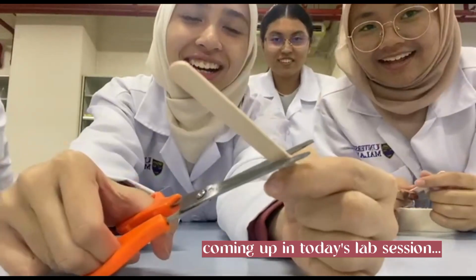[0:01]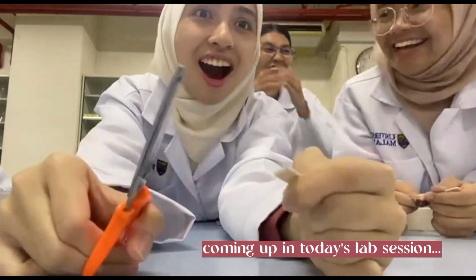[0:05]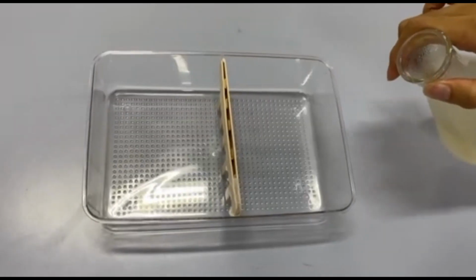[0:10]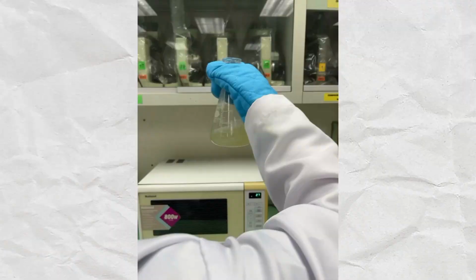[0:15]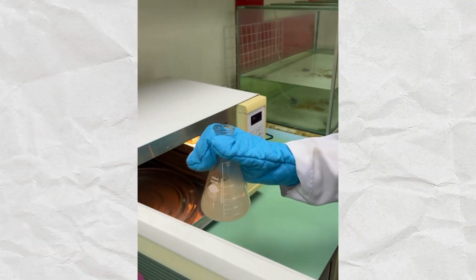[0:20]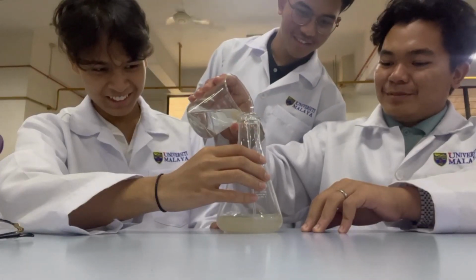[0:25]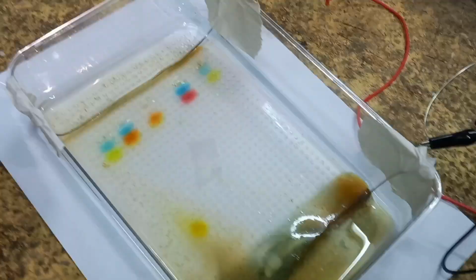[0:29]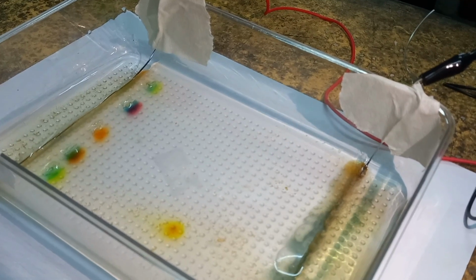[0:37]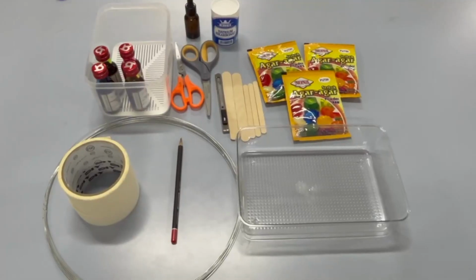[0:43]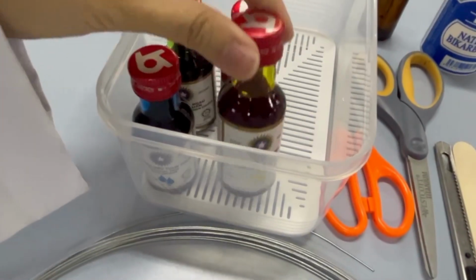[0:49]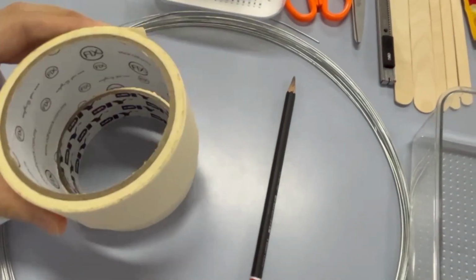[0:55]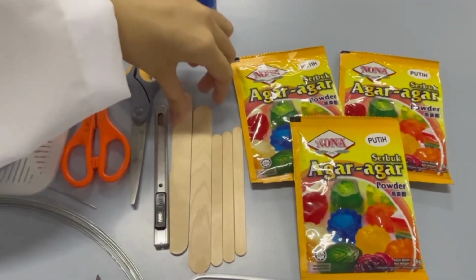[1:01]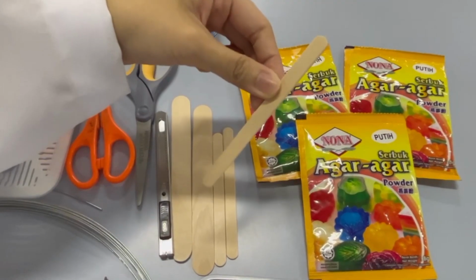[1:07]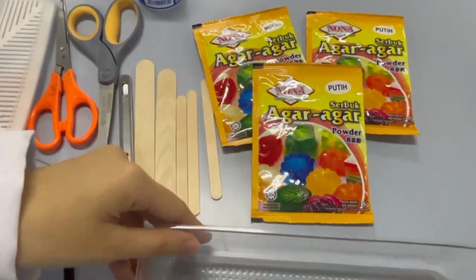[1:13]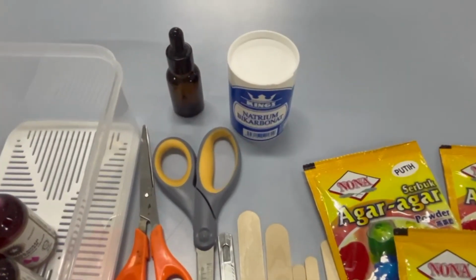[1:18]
Everyone, in this video, we'll show you how we made our DIY gel electrophoresis. These are the materials that you'll need. You'll need a few food colorings that will act as your sample, masking tape, pencil, stainless steel wire, some craft sticks, big and small, as you can see right over here. Agar agar, you'll see there's also some cutting supplies, a shallow plastic container, glycerin and baking soda.
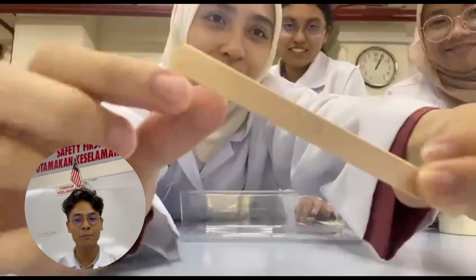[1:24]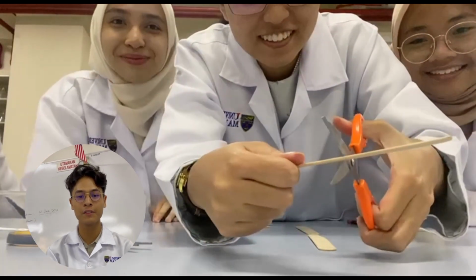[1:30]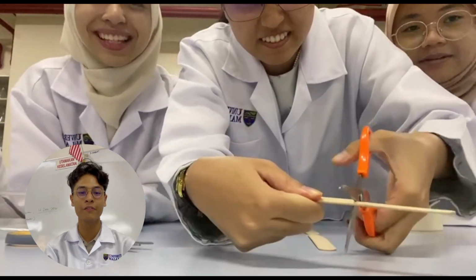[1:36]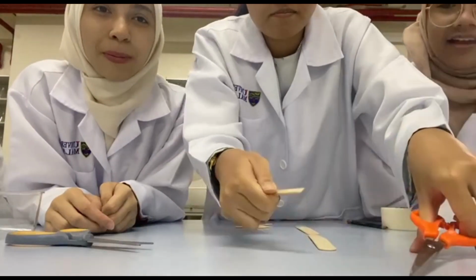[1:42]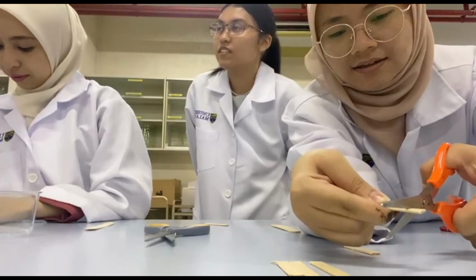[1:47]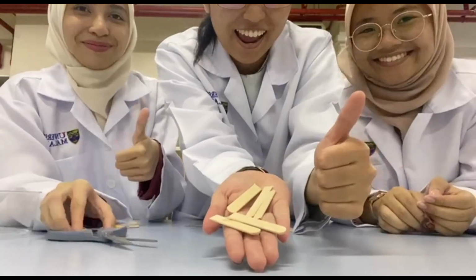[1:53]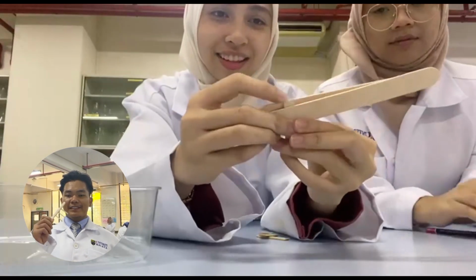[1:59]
First things first, make a comb. This comb is to make the wells in the gel later on. Here you can observe that we are estimating how much of the smaller craft sticks need to be cut in order for it to sit just above the bottom of the box, approximately 1 to 1.5 inches from the hood. Once you get the smaller sticks ready, you can stick 5 of these teeth on one side of the biggest stick using masking tape.
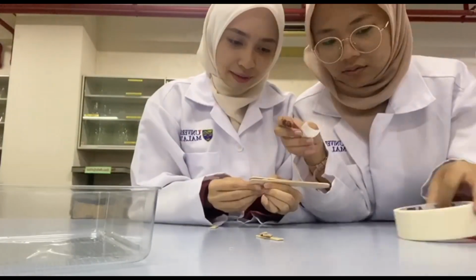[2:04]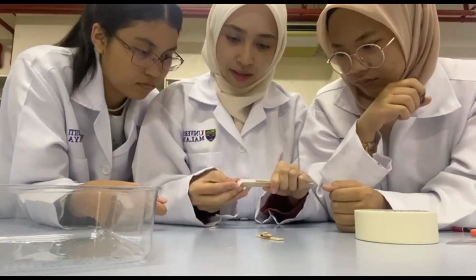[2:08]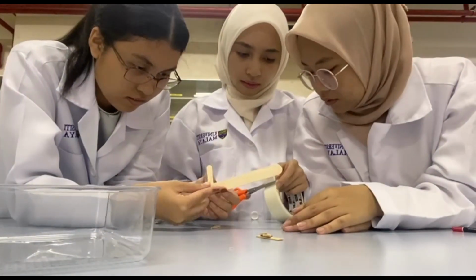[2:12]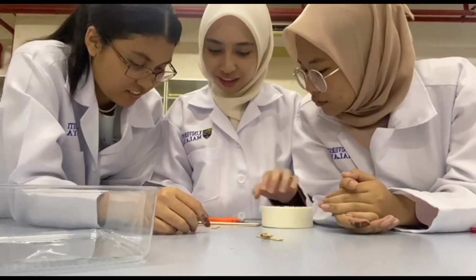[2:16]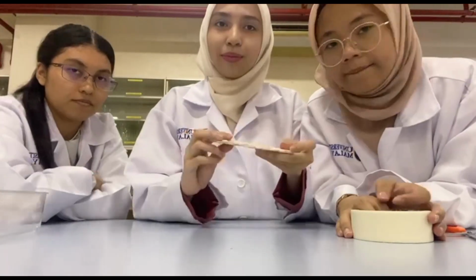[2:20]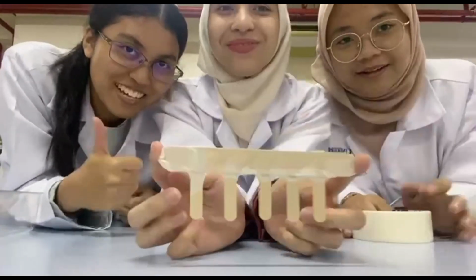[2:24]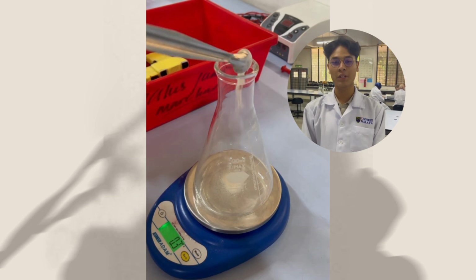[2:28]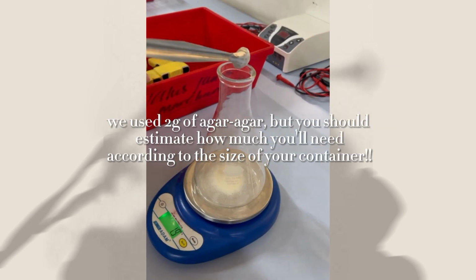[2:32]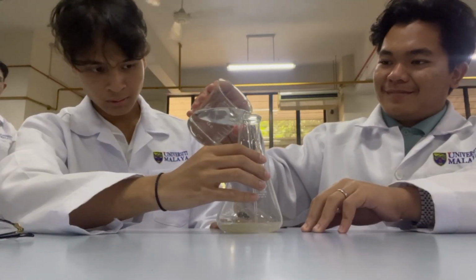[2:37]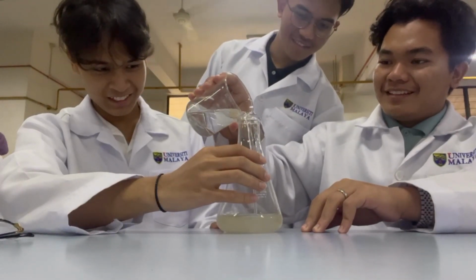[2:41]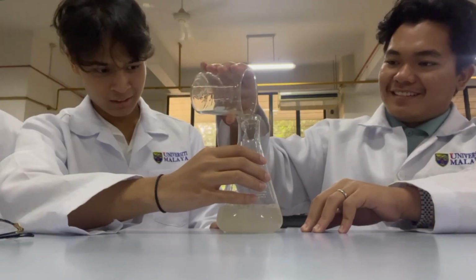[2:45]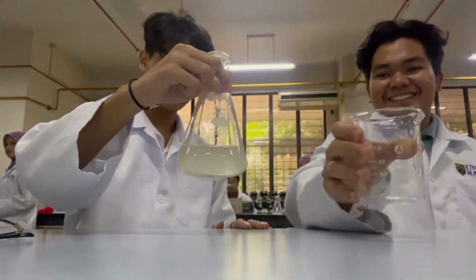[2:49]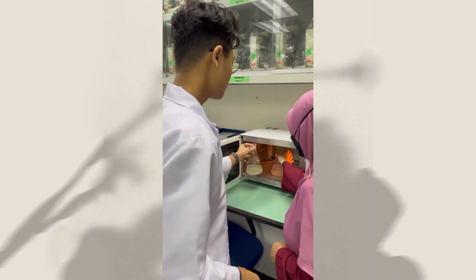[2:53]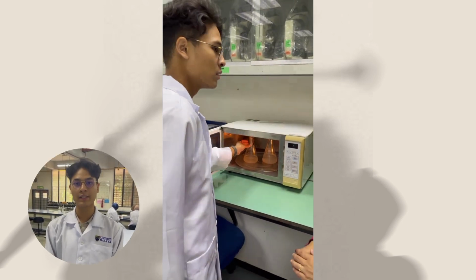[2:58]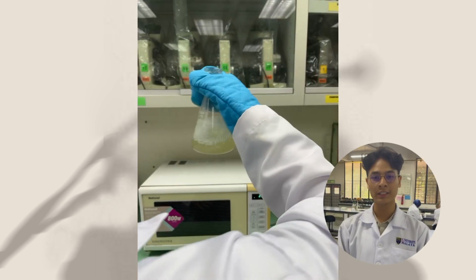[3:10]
Now we are weighing grams of agar-agar powder. Add in liters of buffer solution. Put the solution in the microwave until it starts to bubble. Give a little stir and you got your gel for the electrophoresis.
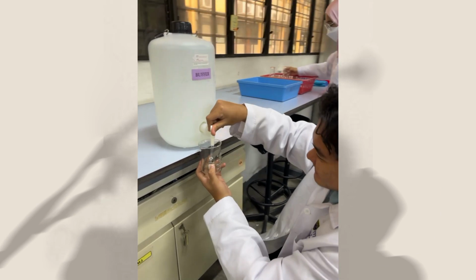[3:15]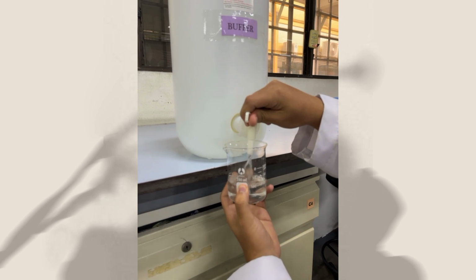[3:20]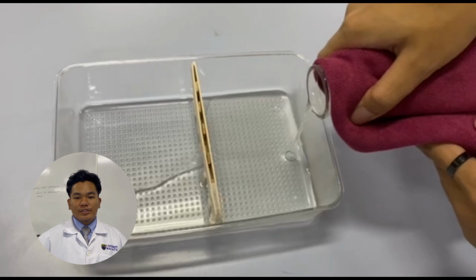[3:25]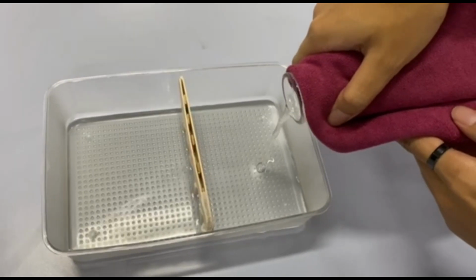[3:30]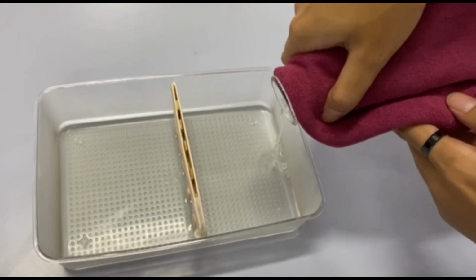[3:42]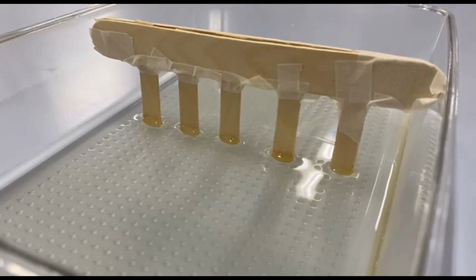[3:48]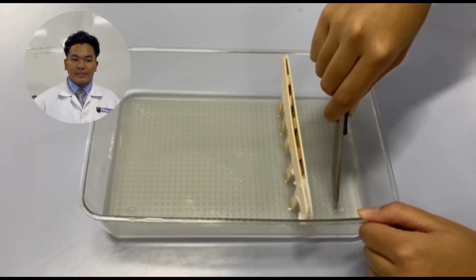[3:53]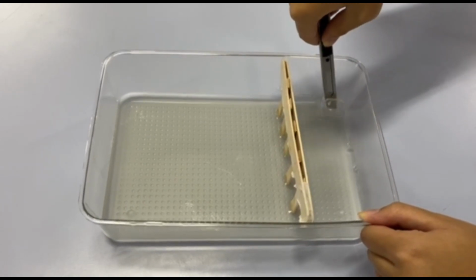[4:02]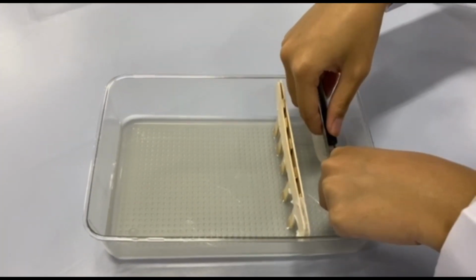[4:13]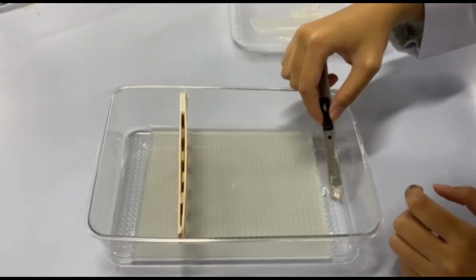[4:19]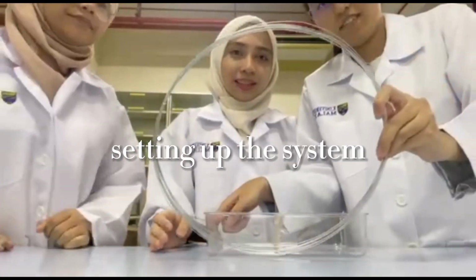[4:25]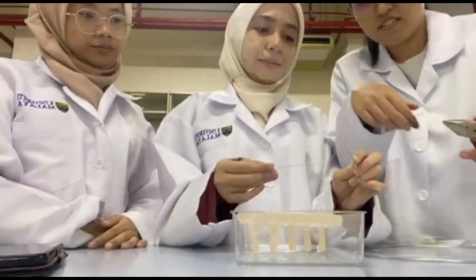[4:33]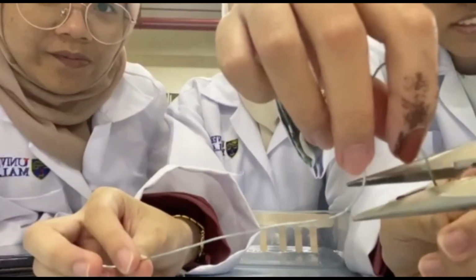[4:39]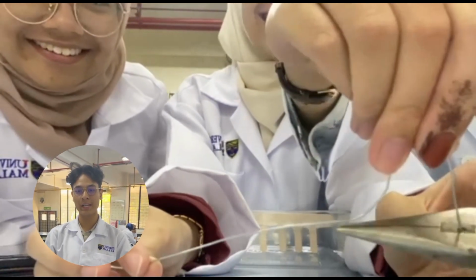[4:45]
Pour the agar-agar solution into the plastic box with the comb in it. It solidifies at room temperature, then cut the side of the gel using a razor blade. Cut the wires using pliers accordingly and put them in the sides of the plastic box. Be careful when using scissors and pliers.
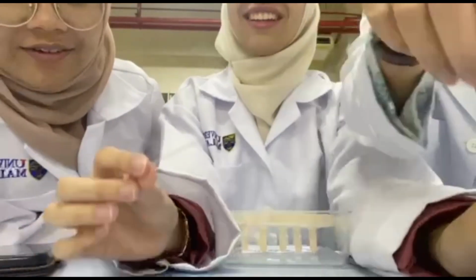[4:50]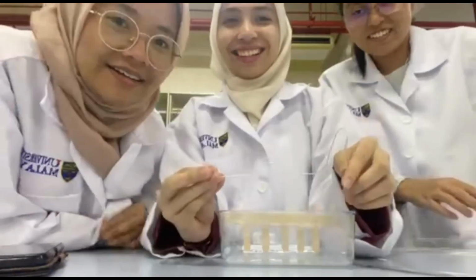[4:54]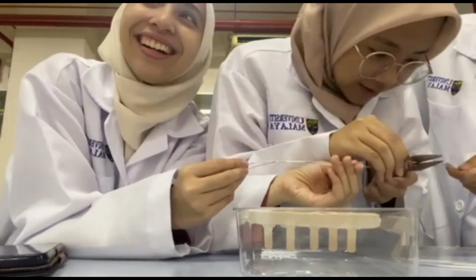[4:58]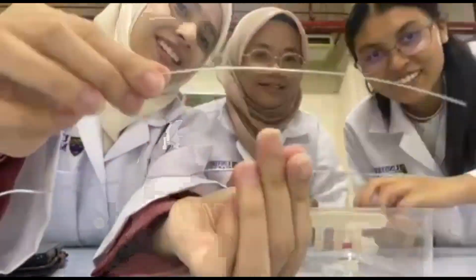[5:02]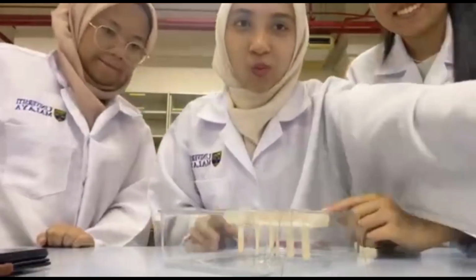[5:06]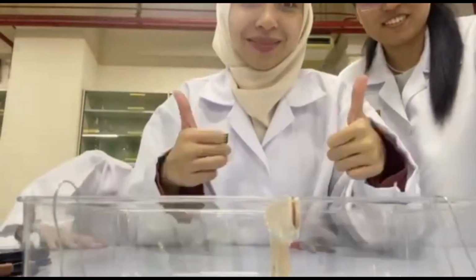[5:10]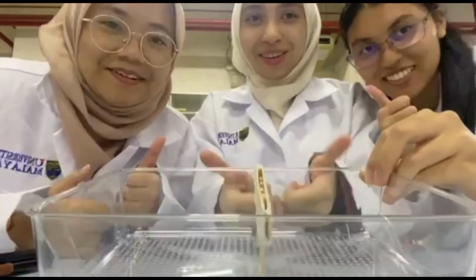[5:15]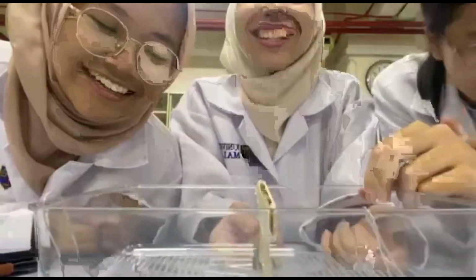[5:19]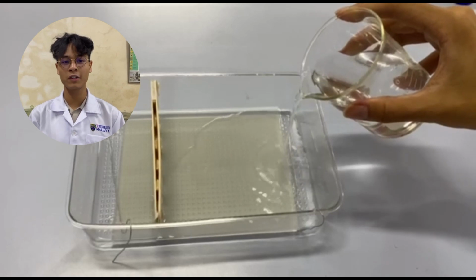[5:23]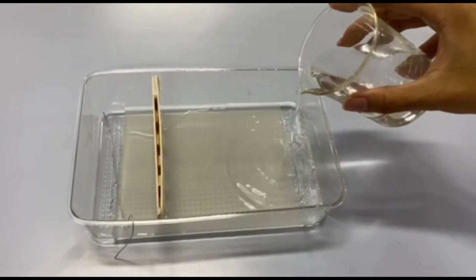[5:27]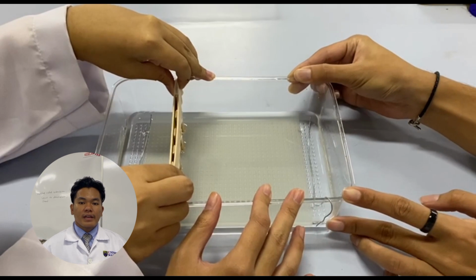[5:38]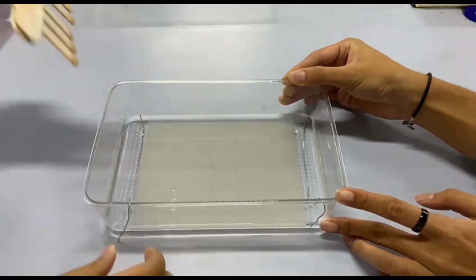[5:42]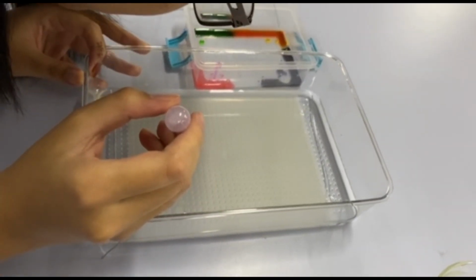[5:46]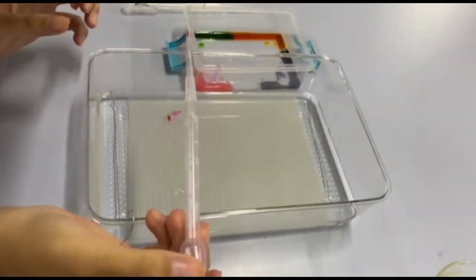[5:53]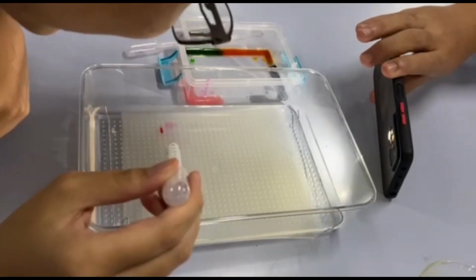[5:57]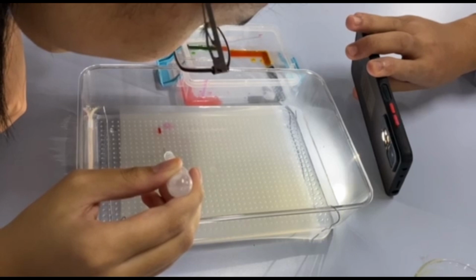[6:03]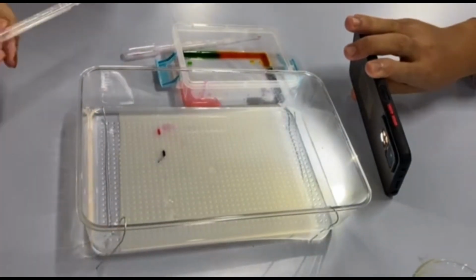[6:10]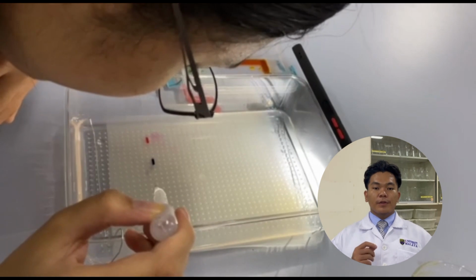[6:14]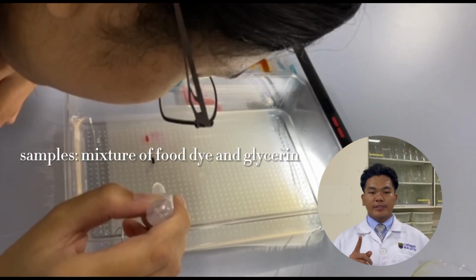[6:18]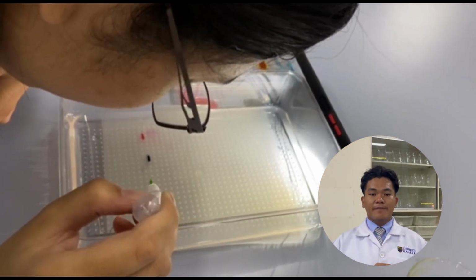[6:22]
Then you can pour in the buffer solution made out of 2 grams of baking soda and 1 liter of water. Take out the comb. Now you will have small wells in the gel. Using the pipette, drop the food coloring samples into the well. It is important for you to make sure the tip of the pipette is inside the well before dropping the sample in.
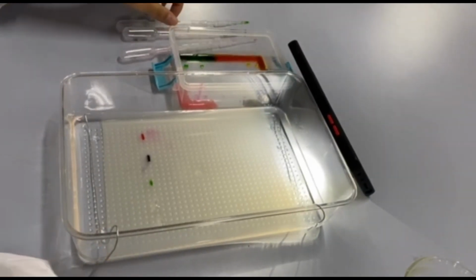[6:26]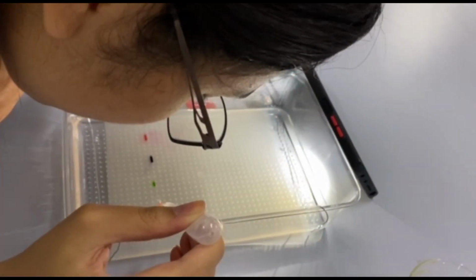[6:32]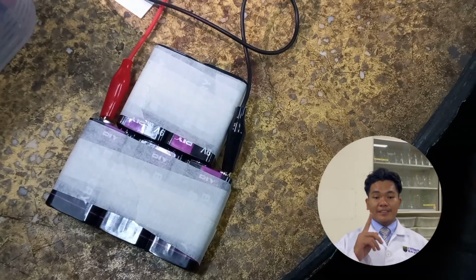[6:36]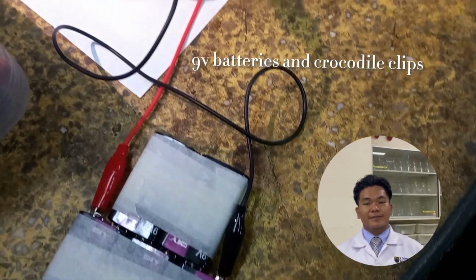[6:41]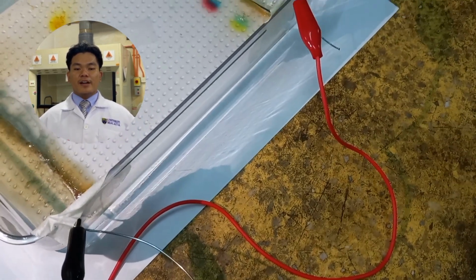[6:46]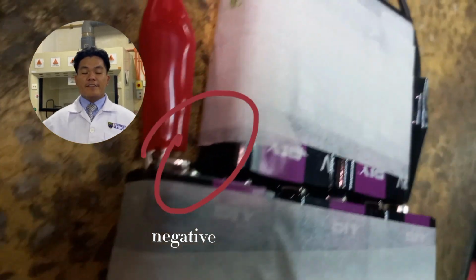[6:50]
Now, let's run the system. Connect the alligator clips to the batteries and stainless steel wires. Make sure the positive and negative terminals are connected correctly. You want the negative terminal to be on the side that has the samples.
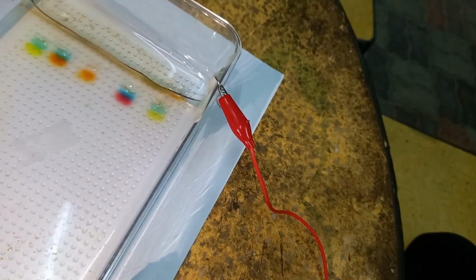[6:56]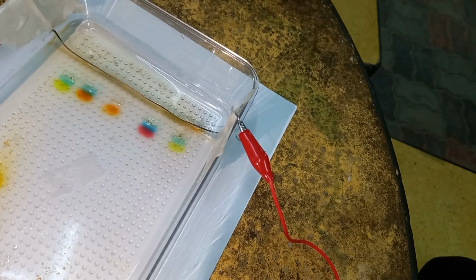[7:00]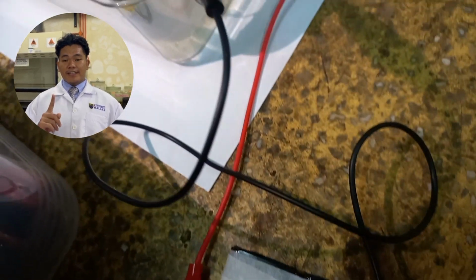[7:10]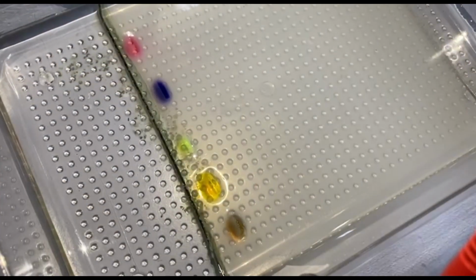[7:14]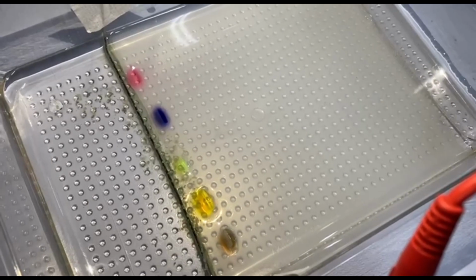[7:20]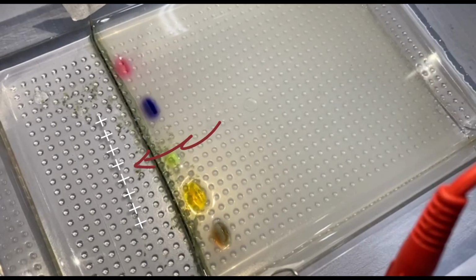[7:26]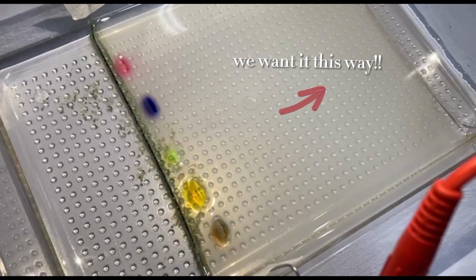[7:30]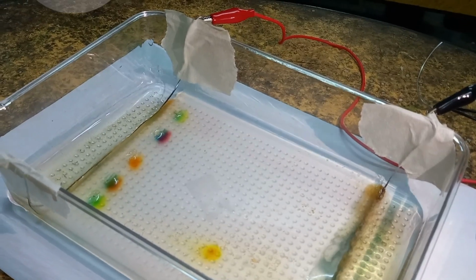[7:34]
Don't make the same mistakes we did during our first try. Food coloring is negatively charged. Therefore, if the positive terminal is put onto the side of the wells, then the food coloring will be attracted towards the positive terminal, which causes it to move towards the wrong side. All that's left is to wait for the sample to move.
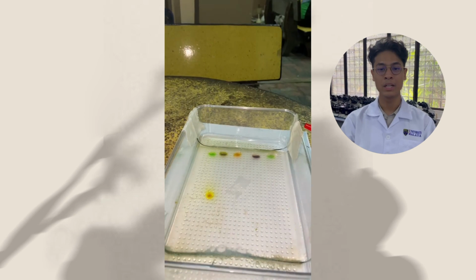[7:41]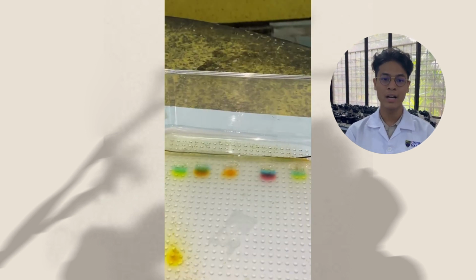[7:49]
So what's happening here? In molecular biology, this technique is used to separate biological compounds such as DNA and protein based on their size. Like the colored dyes, DNA and proteins are negatively charged, so they will migrate towards the positive electrode at different speeds depending on their size.